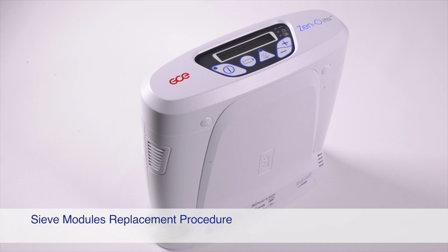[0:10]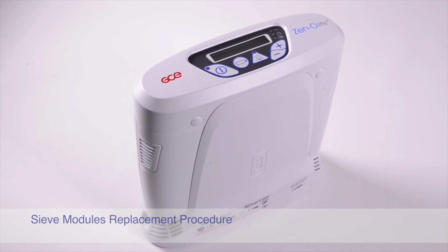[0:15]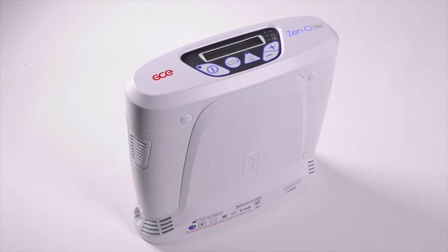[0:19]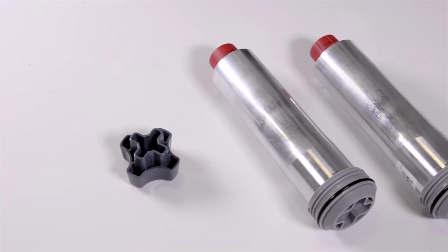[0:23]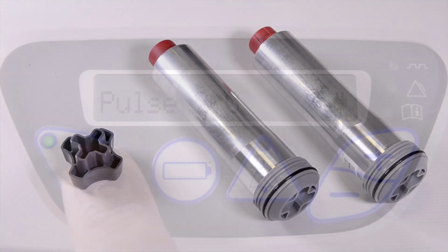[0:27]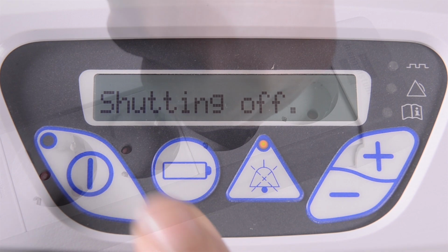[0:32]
The aim of this video is to demonstrate how to replace the sieve modules in the Zen-O Lite Portable Oxygen Concentrator. You will need the following tools and parts to successfully replace the sieve modules: custom removal tool, a new pair of sieve modules. Begin by checking the Zen-O Lite concentrator is off and disconnect the device from any power source.
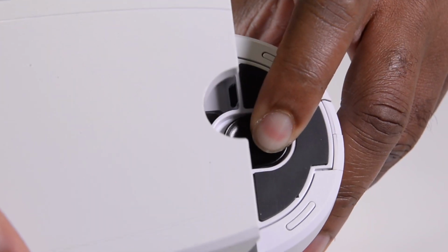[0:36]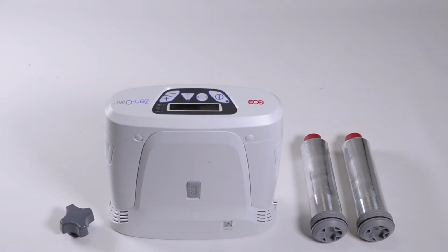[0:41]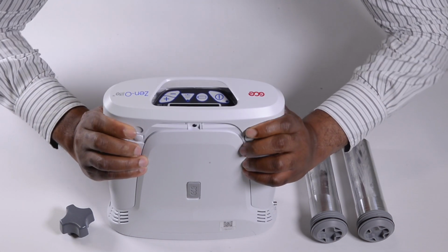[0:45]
Then open the battery compartment to remove the battery. Place the Zen-O Lite concentrator on a flat surface, then press the four release buttons at the top of the device to remove the top cover.
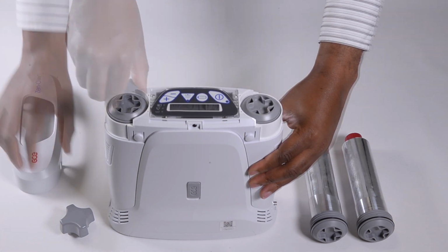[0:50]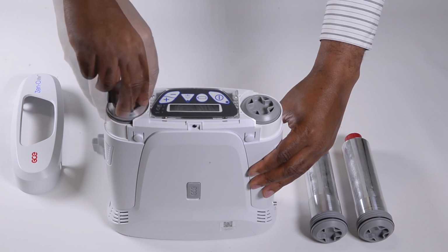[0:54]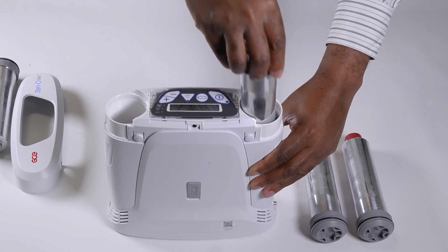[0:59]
Use the custom removal tool to turn the sieve module counterclockwise until it can be freely pulled out of the device. Repeat the process for the second sieve module.
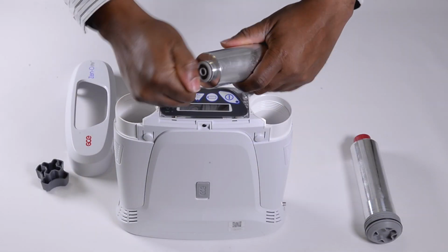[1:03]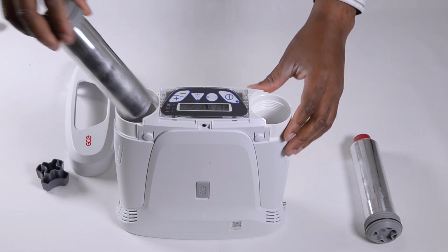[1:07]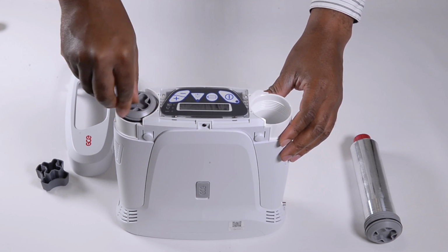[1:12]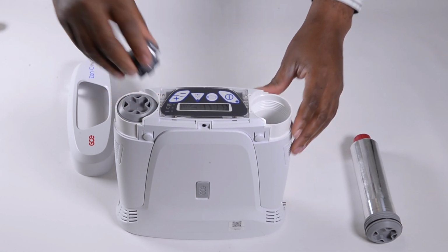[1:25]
Remove the replacement sieve modules from the protective packing. Remove the air plug on one of the sieve modules and immediately install the replacement module. It is important not to leave the new sieve module exposed. Hand tighten the module in a clockwise motion, then use the custom tool to finish installing. Do not over tighten. Repeat the installation process for the second sieve module.
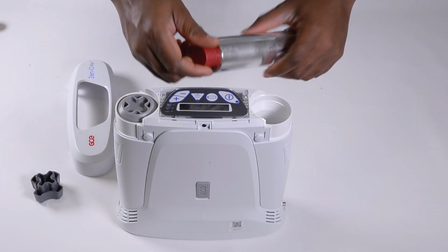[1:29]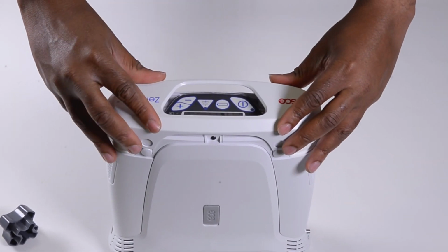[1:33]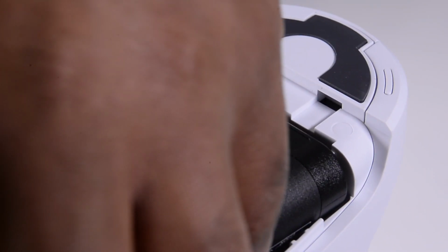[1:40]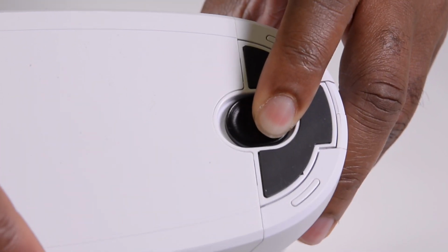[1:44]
Reinstall the top cover of the device by pushing down over the top of the concentrator until all four buttons snap into place. Then insert the battery and ensure the battery cover clicks into place.
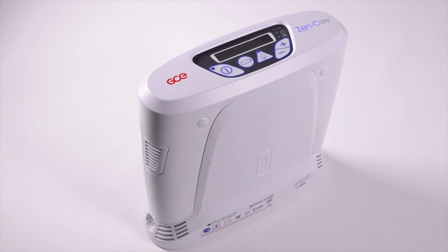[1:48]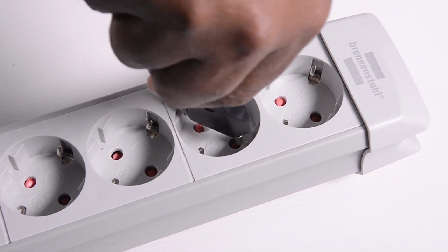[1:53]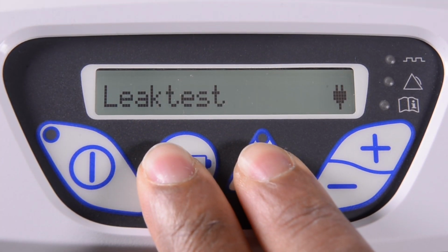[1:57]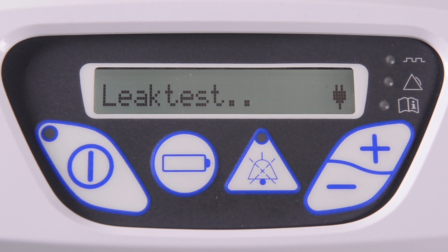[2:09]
After the sieve modules have been replaced, a leak test is required. Connect the concentrator to an AC or DC power supply, then simultaneously press the alarm and battery buttons until leak test is shown in the display. Once the Zen-O Lite concentrator has successfully completed the test, the device will show passed in the display.
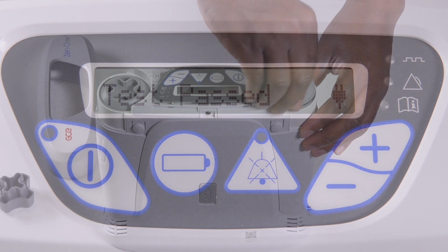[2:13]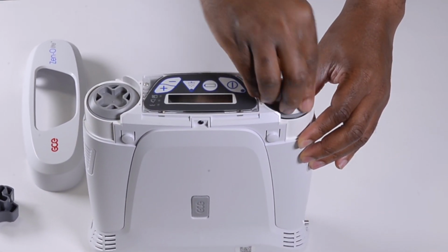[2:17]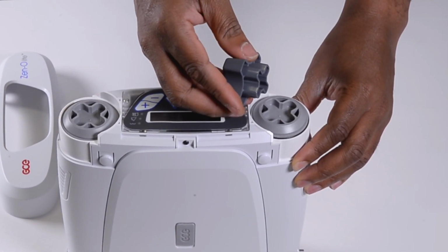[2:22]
If the test fails, check that the sieve modules are fitted correctly and tightened. Contact your distributor or GCE authorised repair centre if the concentrator does not pass after multiple attempts.
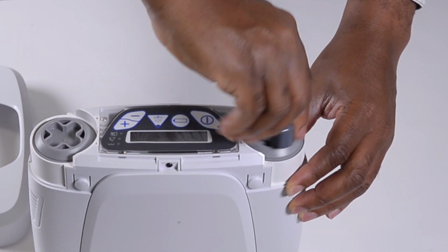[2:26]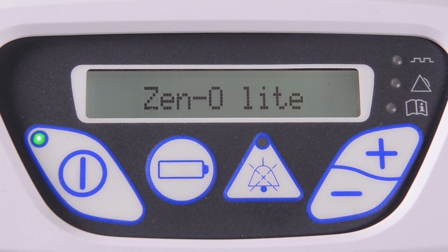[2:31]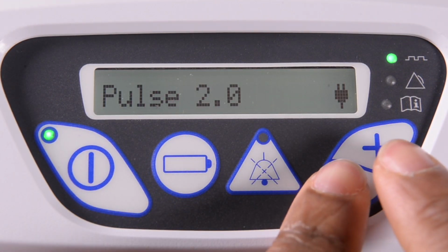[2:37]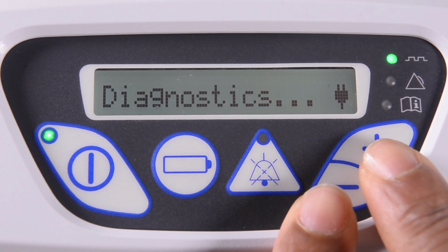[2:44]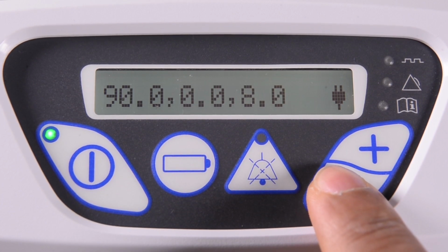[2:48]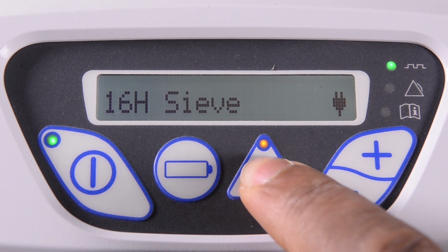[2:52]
With the device switched on, clear the sieve hour counter by entering the concentrator's diagnostic mode. To do this, press the plus and minus buttons simultaneously until diagnostics is shown in the display. Use the plus or minus buttons to cycle through the device until the sieve counter is shown. Press and hold the mute button until the hour counter changes to zero.
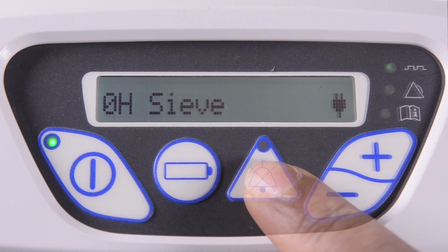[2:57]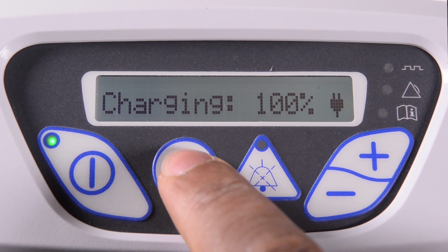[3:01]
You can now exit the diagnostic mode by pressing the battery button. Your Zen-O Lite oxygen concentrator is now ready to be used.